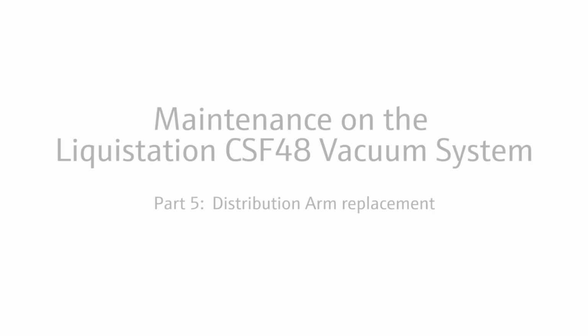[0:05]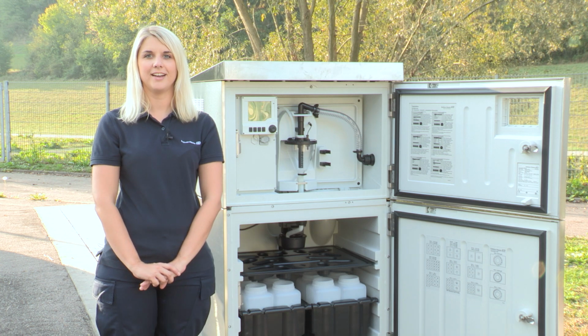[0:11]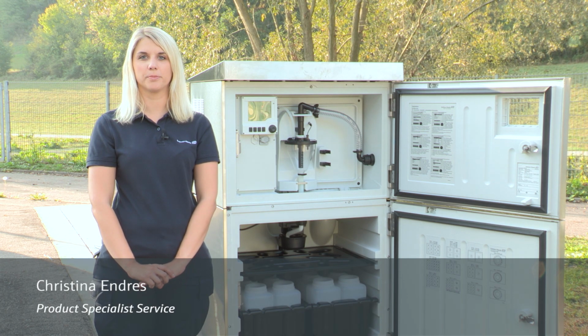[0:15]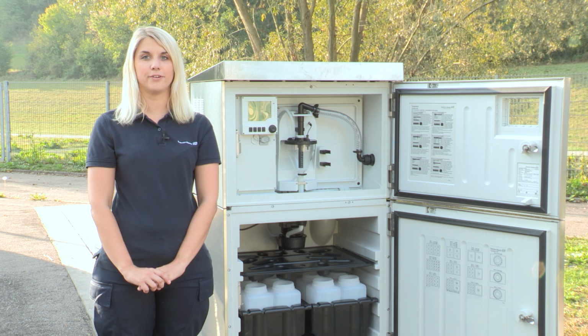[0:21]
The CSF48 is our reliable and easy-to-use stationary water sampler for time-controlled, volume-proportional, flow-proportional and event-triggered sampling.
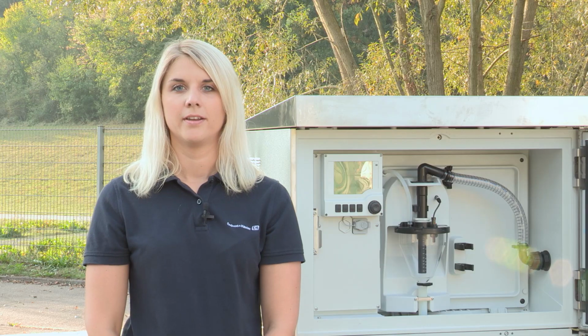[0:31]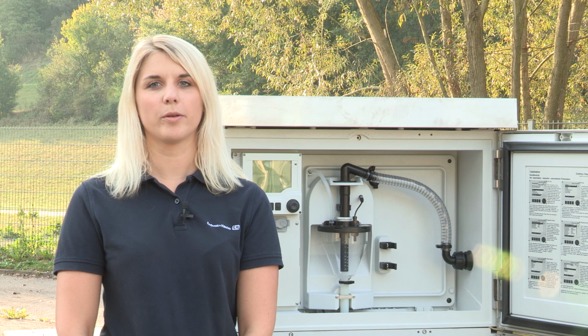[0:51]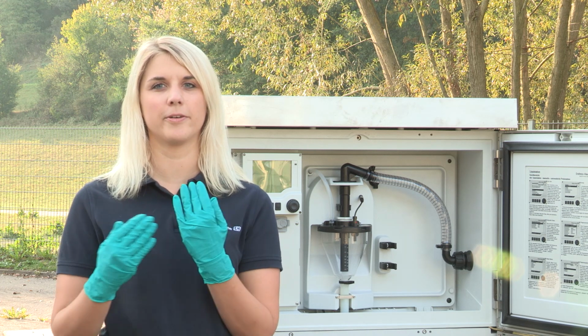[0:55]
The maintenance of the CSF48 vacuum system is split into different parts. In part 4 we replaced the filter mat. In this video we will show you how to exchange and calibrate the distribution arm and set back the counters for the replaced parts. When working with samplers please wear your personal safety equipment and chemical resistant gloves.
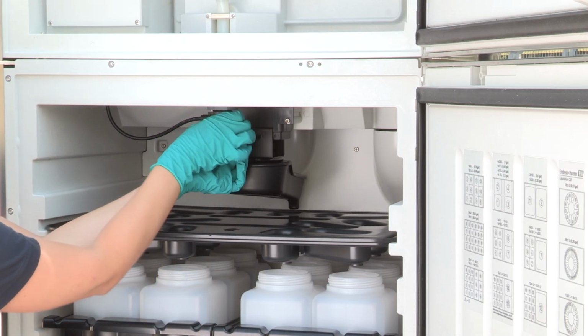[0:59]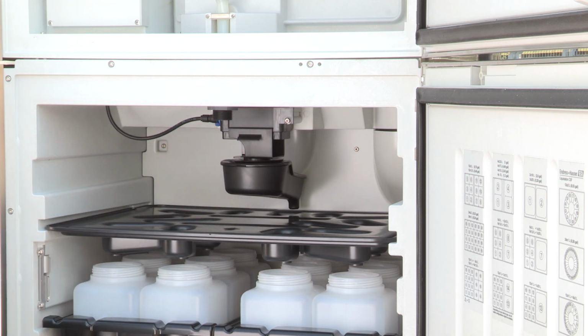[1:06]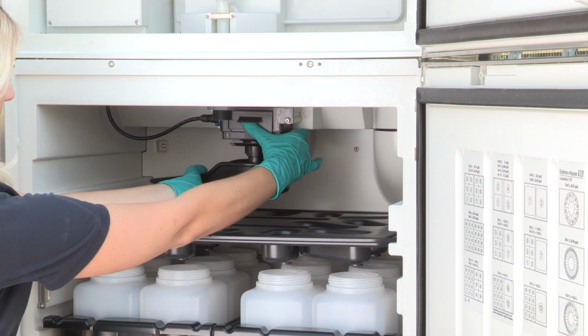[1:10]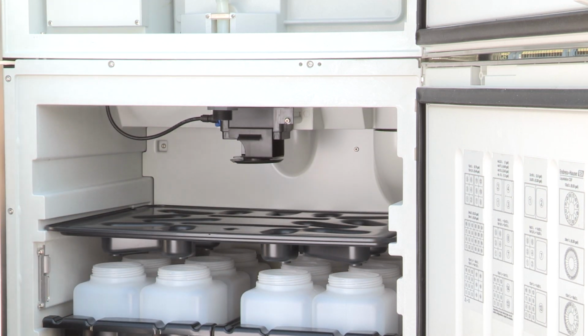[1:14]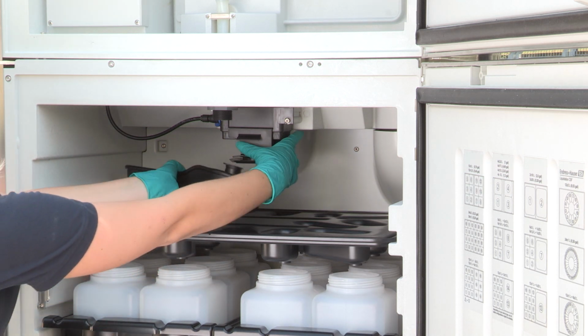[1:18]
Unscrew the cap nut of the downpipe first. Take both parts out. Turn the rotary tab to the left position and push up the splash guard. Pull the rotary tab to the left and take it out of the sampler. Take the new rotary tab and downpipe from the kit and reinstall it in reverse order.
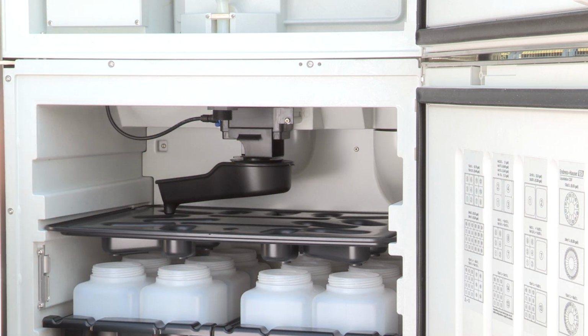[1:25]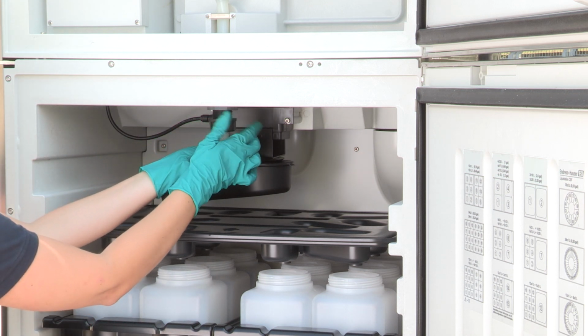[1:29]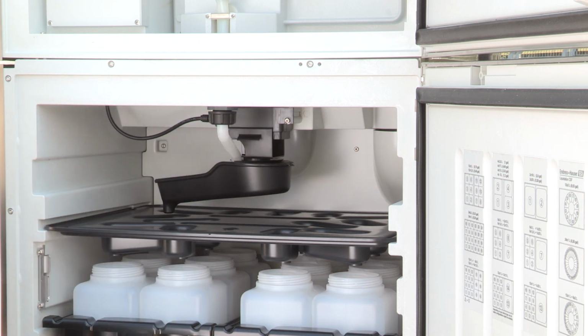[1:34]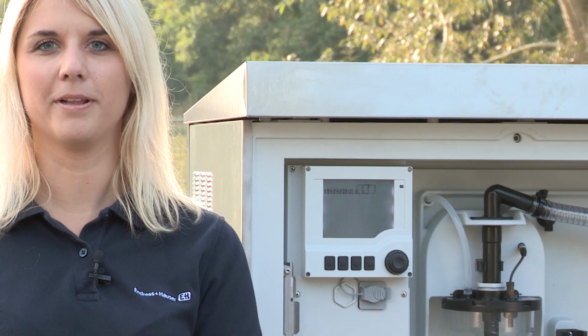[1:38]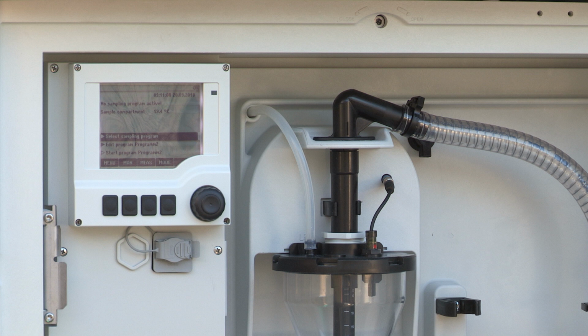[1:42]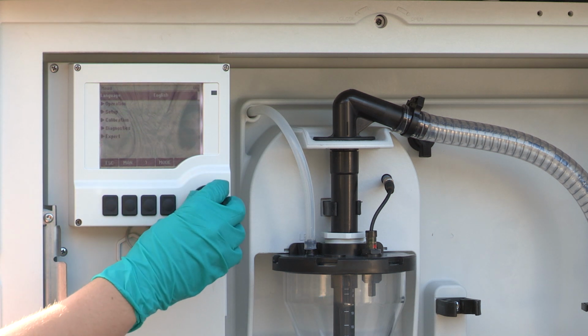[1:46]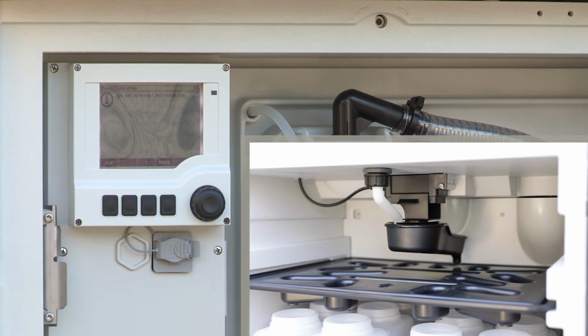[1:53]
Now reconnect the sampler to the power supply. To calibrate the distribution arm go to menu, calibration, distribution arm, select go to reference point and wait until the distribution arm stops.
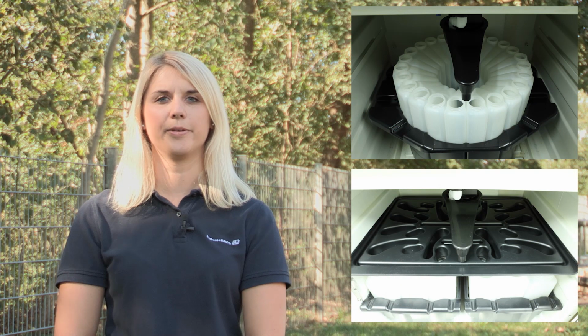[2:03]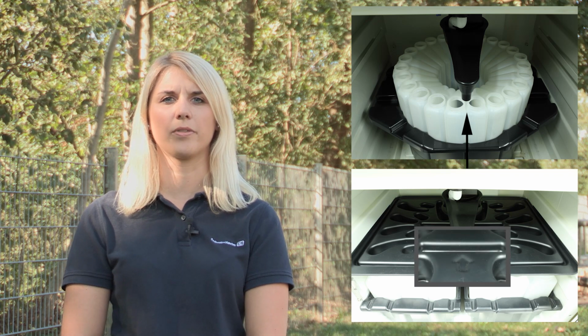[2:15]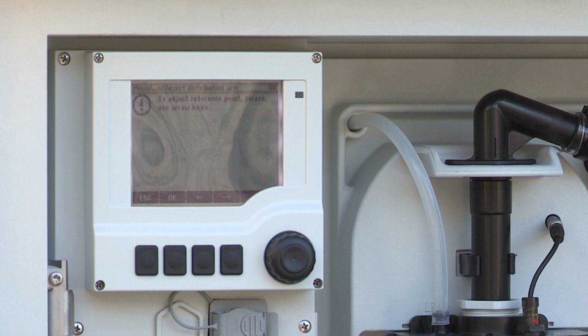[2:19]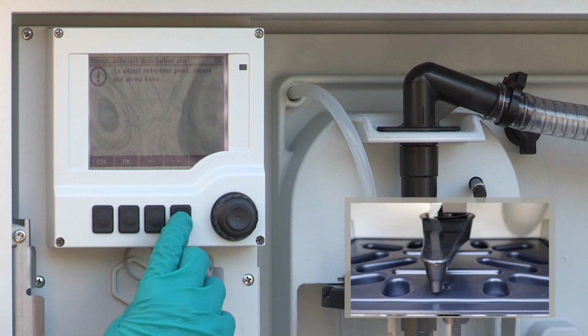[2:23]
For samplers with a direct distribution the reference point is marked at the front between the first and the last bottle. For samplers with a distribution plate the reference point is marked at the distribution plate in the front with an arrow. If the reference point was reached confirm directly with OK. If the reference point was not reached first correct the position.
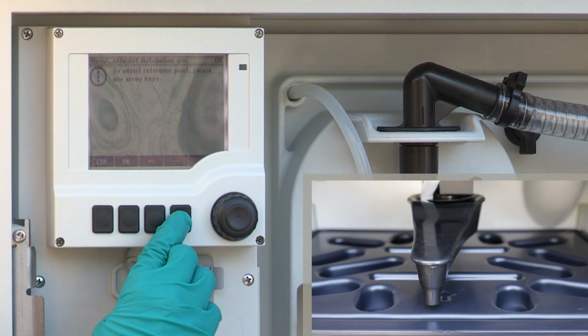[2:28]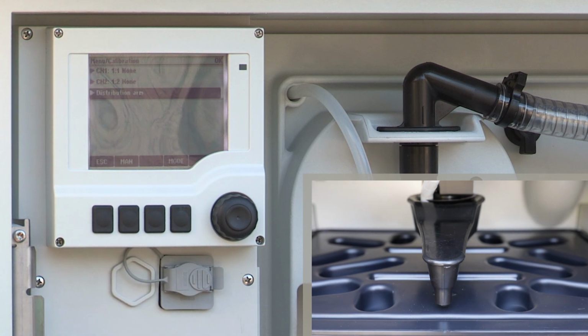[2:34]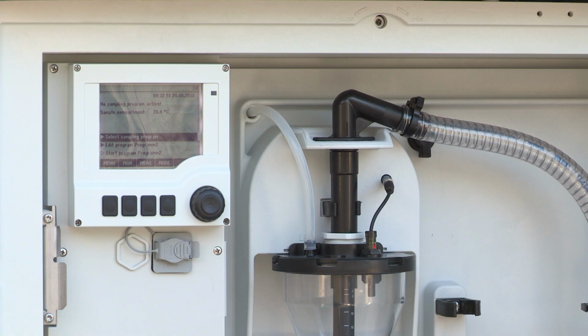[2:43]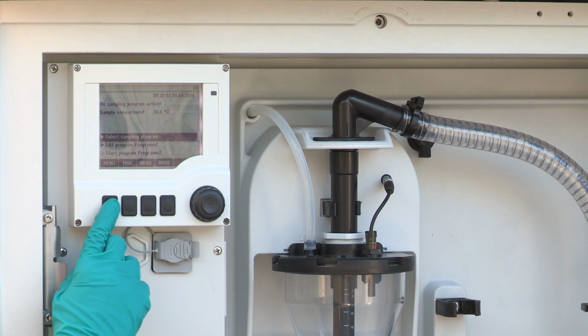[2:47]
We have now replaced successfully all wear parts of the sampler. To set back the totalizers in the menu please go to menu, diagnostics, operating time information. Reset the counter for the dosing valve and the vacuum pump.
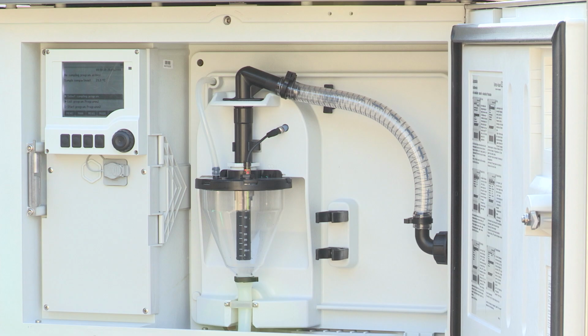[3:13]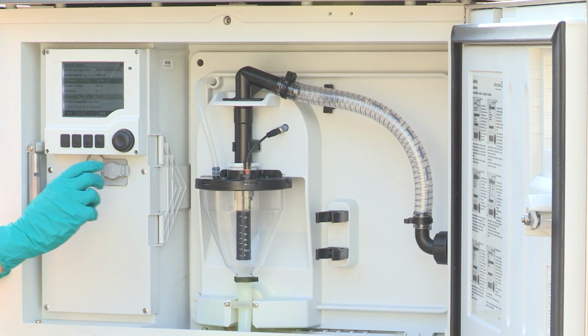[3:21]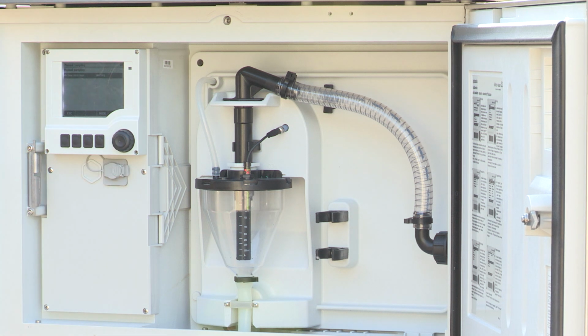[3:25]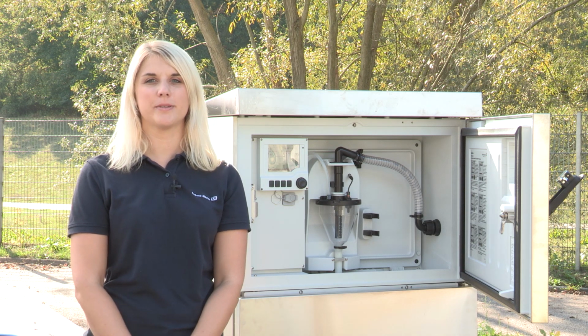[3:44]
To guarantee a proper operation of the sampler please perform a manual sampling test. Therefore select man and then start sampling. The maintenance of the LiquiStation CSF48 vacuum system is now finished.